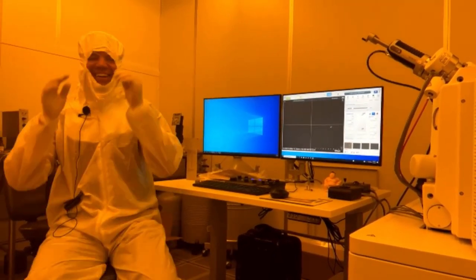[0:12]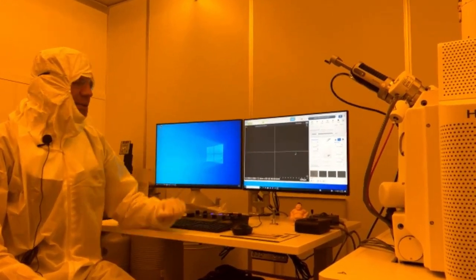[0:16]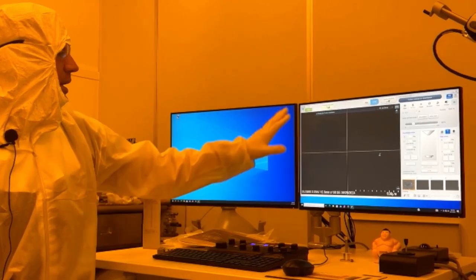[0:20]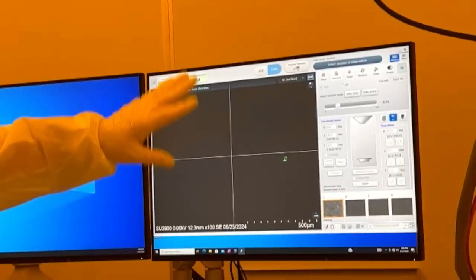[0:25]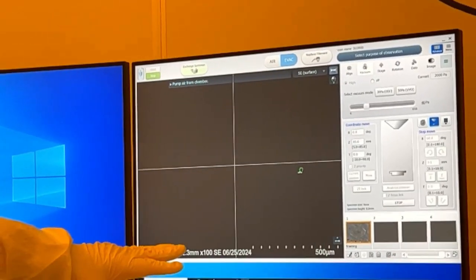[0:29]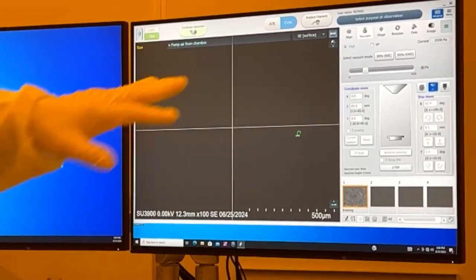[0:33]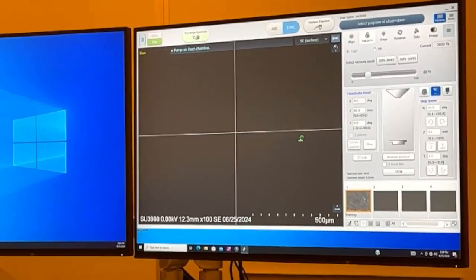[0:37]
So I'm going to go over the filament replacement. How do we know our filament is blown? When we go to turn the filament on, we hit start, and it goes through its startup procedure. You may get a message saying zero emission, check filament. Otherwise, our emission current, our IE, is going to be at 0.
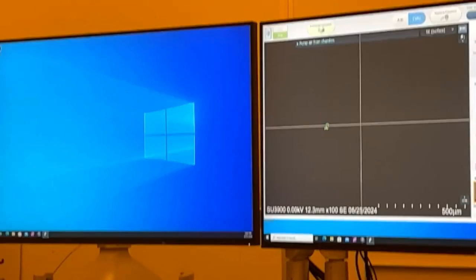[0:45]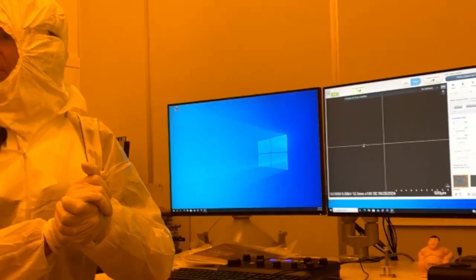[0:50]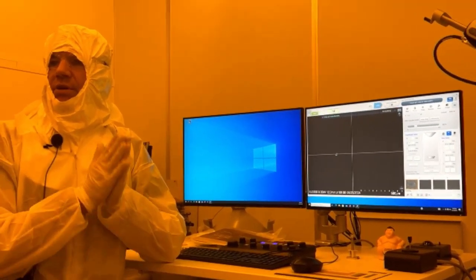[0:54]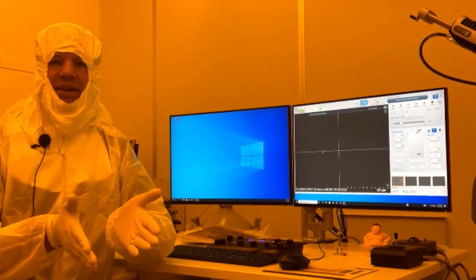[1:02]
Before we do that, though, we want to make sure our filament is actually turned up. Okay? When you add a new user, the default setting for the filament heating current is 0. So you may think, oh shoot, I just started and I have a blown filament.
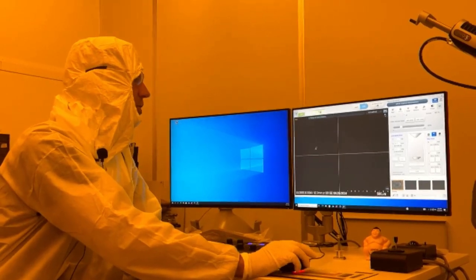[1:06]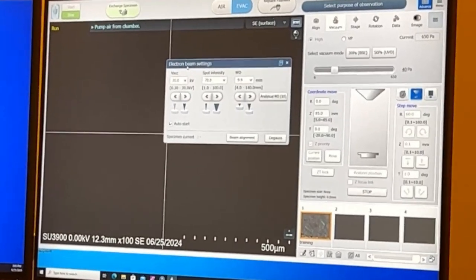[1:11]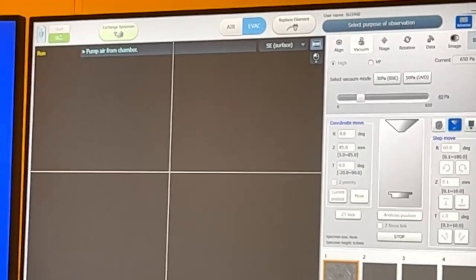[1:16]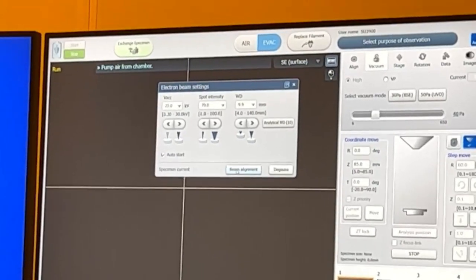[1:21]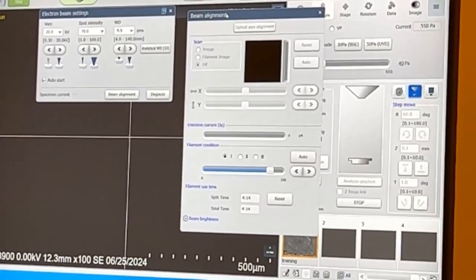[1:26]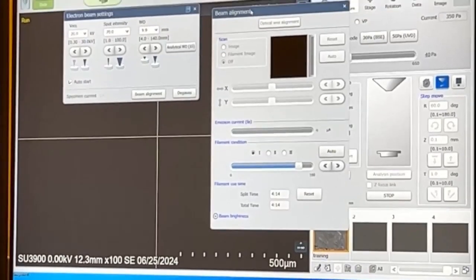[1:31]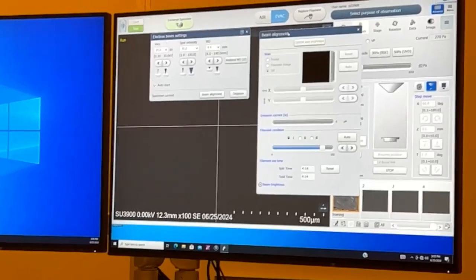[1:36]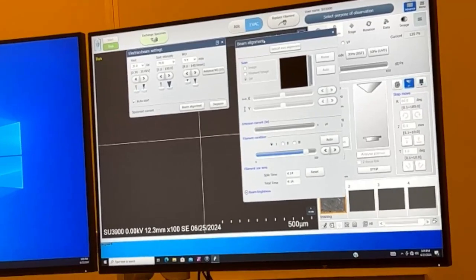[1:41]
So I'm going to show you, if we right click on anything, it brings up another menu. I right clicked on the start stop, and now I'm going to go to beam align. This I didn't show you earlier. I showed you the simple alignment. The beam align is mainly for when we put a new filament in, because that filament is not going to be in the exact same position. It'll be close, but not exactly the same position. So we're going to need to do a beam align.
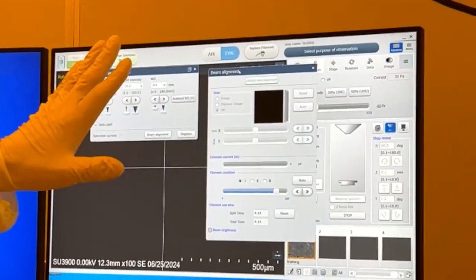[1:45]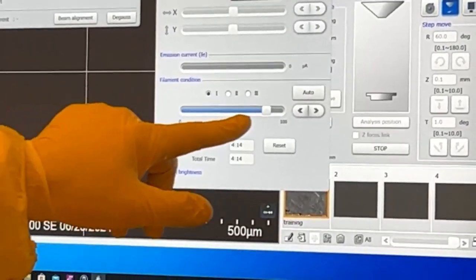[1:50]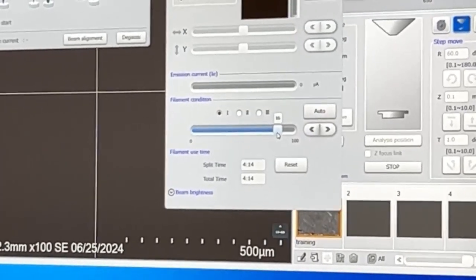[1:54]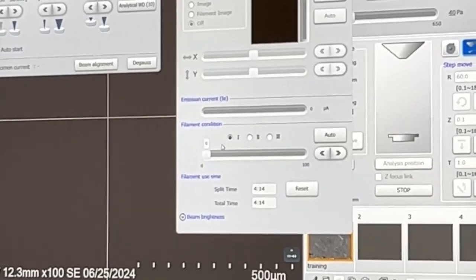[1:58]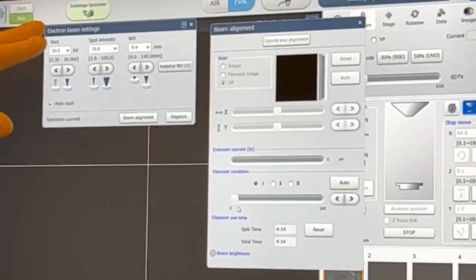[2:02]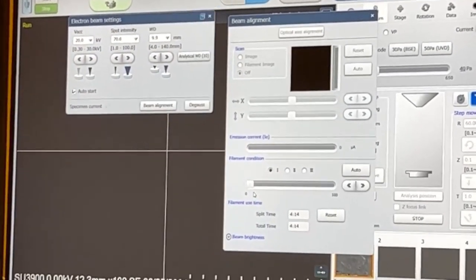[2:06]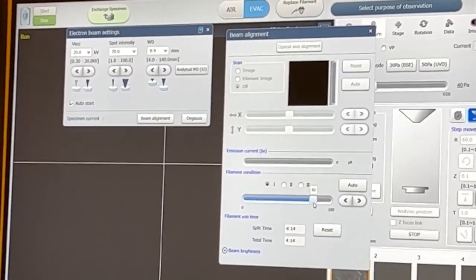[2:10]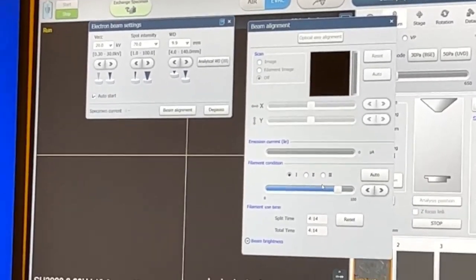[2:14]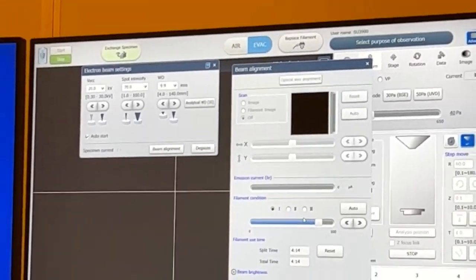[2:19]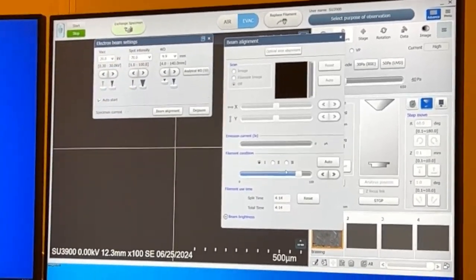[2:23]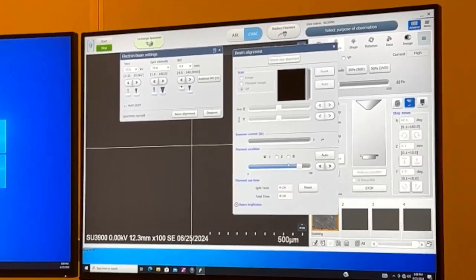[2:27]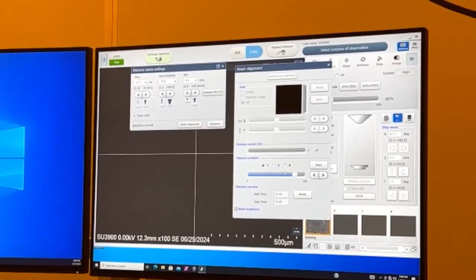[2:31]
So before we go ahead and change a filament, let's make sure we have our filament heating current. When you create a new user, it's going to default to 0. So you need to come in here to our beam setting and then beam align, and make sure that is anywhere between 75 and 85. That gives it a range, so then it can do an auto filament saturation. If it's at 0, it's not going to turn that filament up for us, unless it's already in a range that's producing electrons.
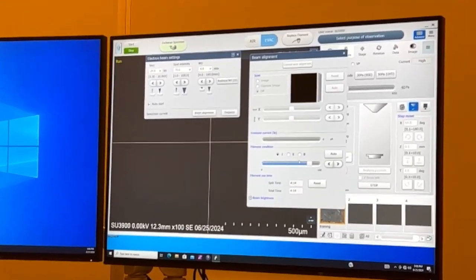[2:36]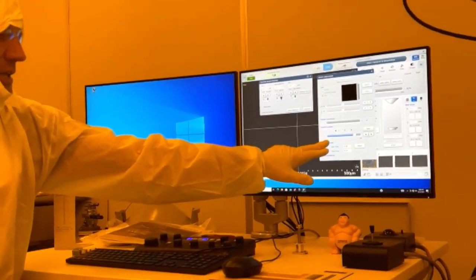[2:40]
So just double check that before you go ahead and change a filament. Just make sure somehow this didn't get turned back down to 0. Okay.
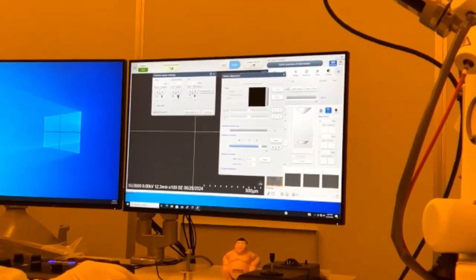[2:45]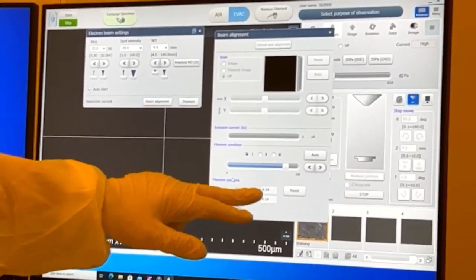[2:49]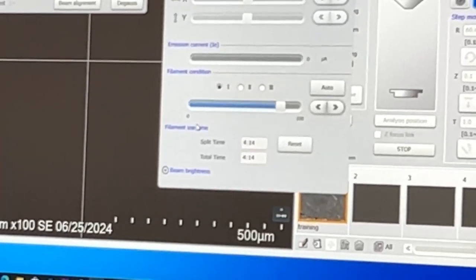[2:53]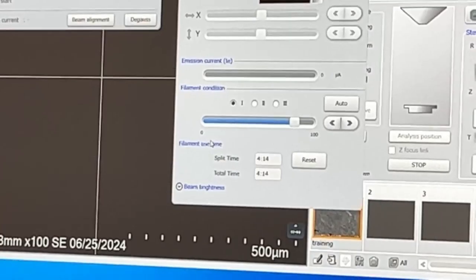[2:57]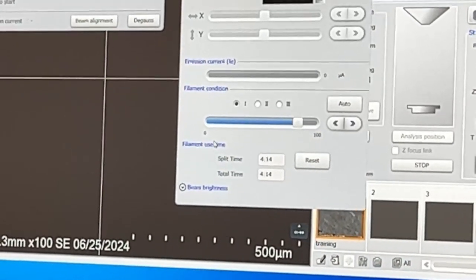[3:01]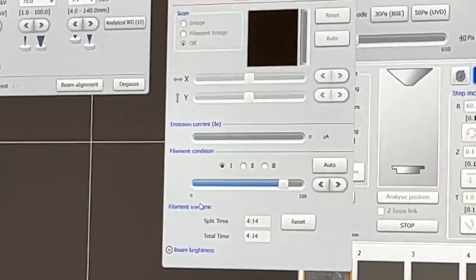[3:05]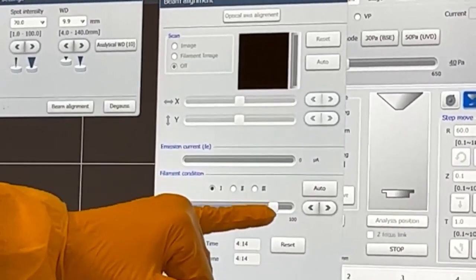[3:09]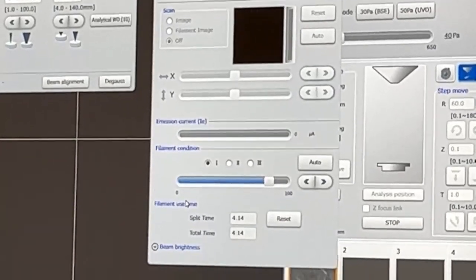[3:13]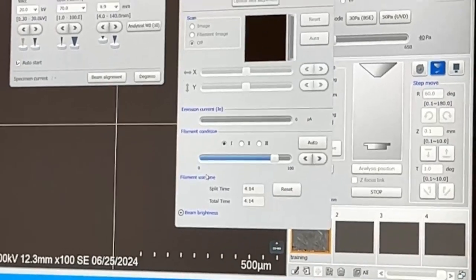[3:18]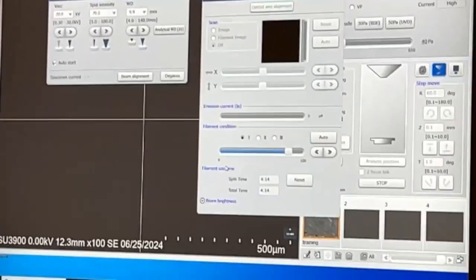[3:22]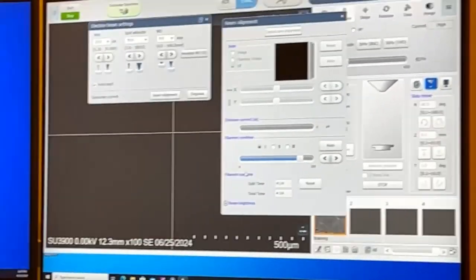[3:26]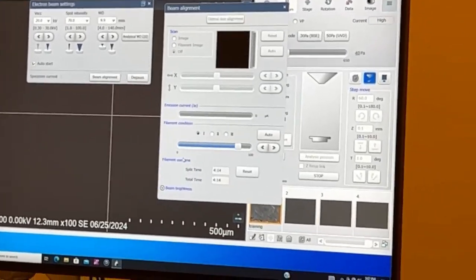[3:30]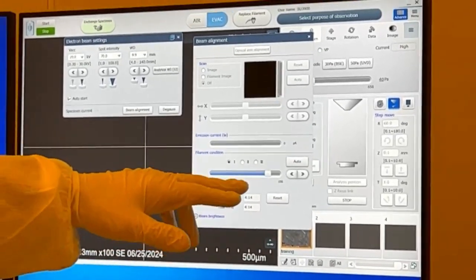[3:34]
This is our filament hours here. If you want to know how many hours are on the current filament, there's 4 hours on this filament so far. Like I said, you usually get around 100 hours. If you're getting much shorter than that, it could be because we're oversaturating our filament, and that is because this slider is turned all the way to 100. Just increasing the filament doesn't mean you're going to get a better image or more signal. We're just shortening our life, because there's a point where you saturate and then you oversaturate. You're not gaining anything, you're just shortening the life. Right now, you set it at 80%. If I hover over it, I'm at 85.
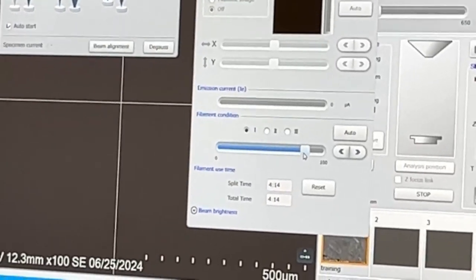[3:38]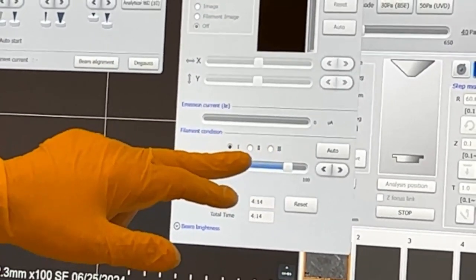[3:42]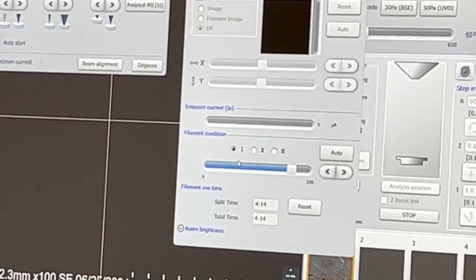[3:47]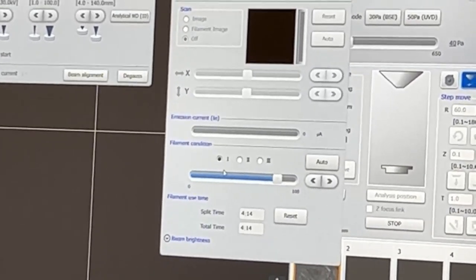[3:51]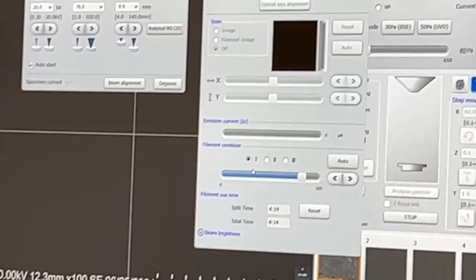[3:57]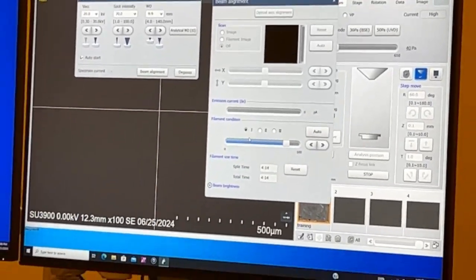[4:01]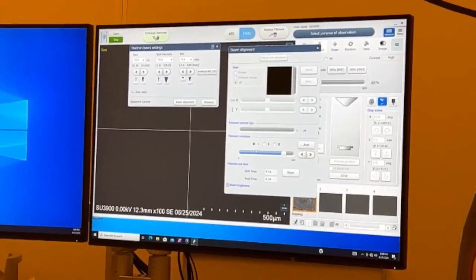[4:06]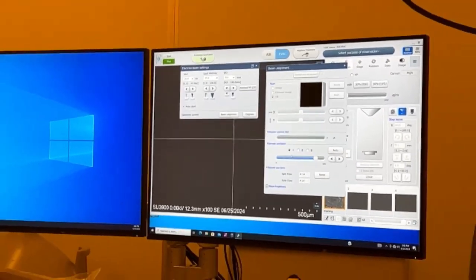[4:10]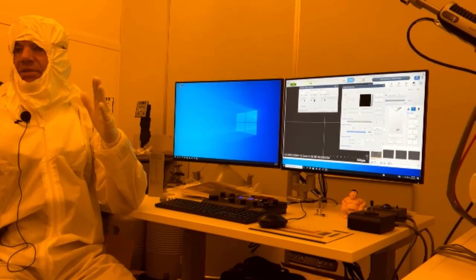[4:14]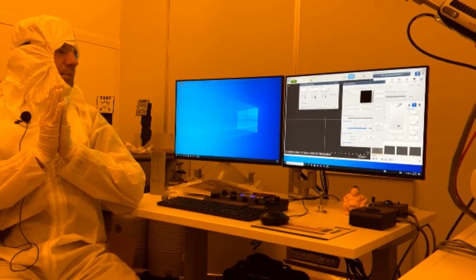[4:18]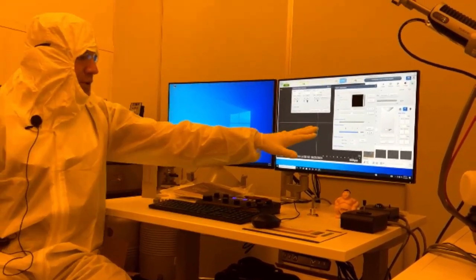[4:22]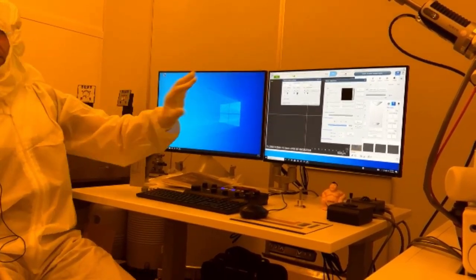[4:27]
These 3 buttons here, 1, 2, 3, are our saturation points. We have a low saturation, a mid, and a high. They're presets. When we turn the beam on, it's basically setting how much heating current we're running through there. 1 is going to give us our longest hours of operation of that filament. 2 is closer to saturation, and 3 is right at saturation, but that's going to shorten your life. So if you get good enough images at 1, just leave it there. We were operating at 1. We had really good images and a lot of signal. So right now, is it 1?
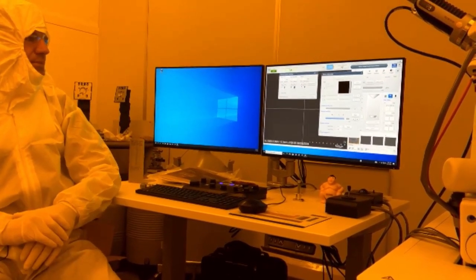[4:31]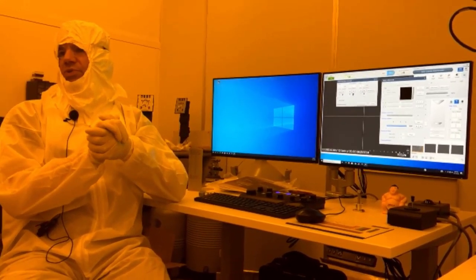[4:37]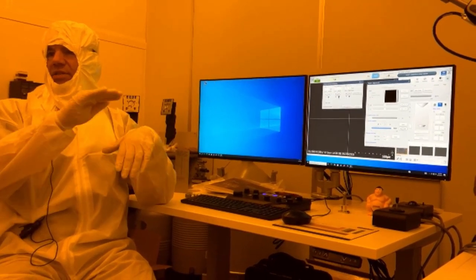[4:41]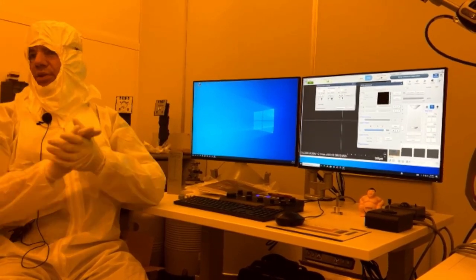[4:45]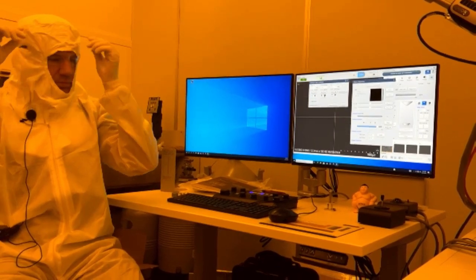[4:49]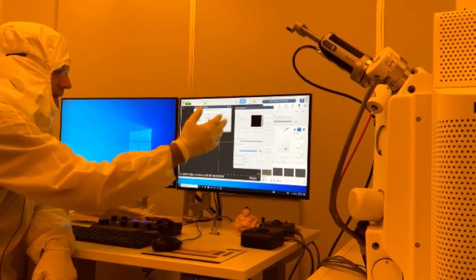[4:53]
It's at 1. Okay, 85% already? It's not a percentage, it's a voltage. It corresponds to a voltage reading. So it's not necessarily a percentage per se. It just corresponds to a certain voltage we're running through that current, or the wire. So we're at 85.
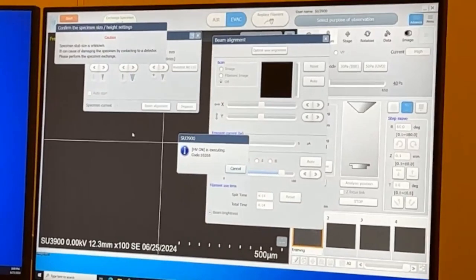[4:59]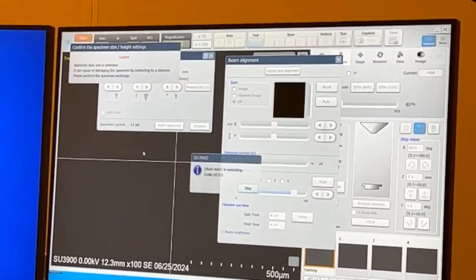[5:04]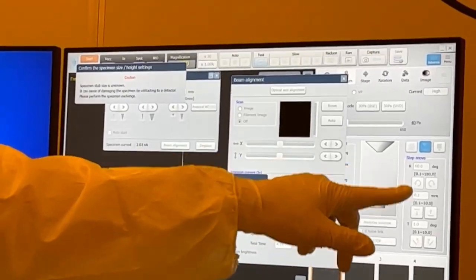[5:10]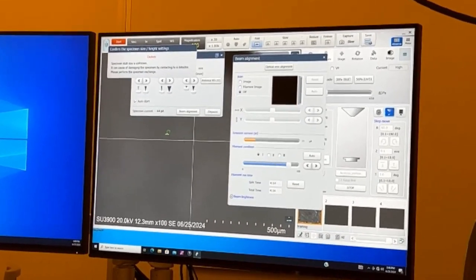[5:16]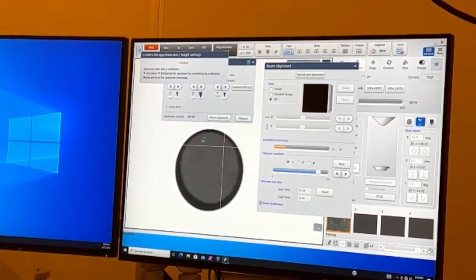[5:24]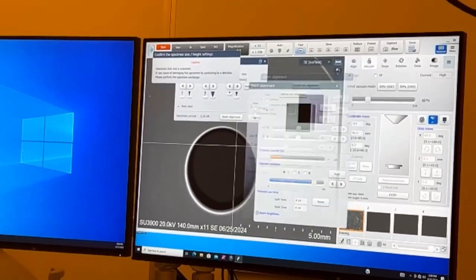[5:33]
Now if I turn my beam on, it's giving me an error message because it doesn't know what size samples are in there. But what's good about that is my stage is grayed out. I can't move my stage. The software knows there's, I don't know what's in there, so we're not moving. I can still change my mag and focus, but we're just looking at the stage. I cannot move my stage because this is all grayed out and the joystick doesn't work.
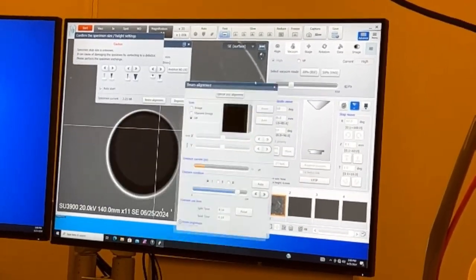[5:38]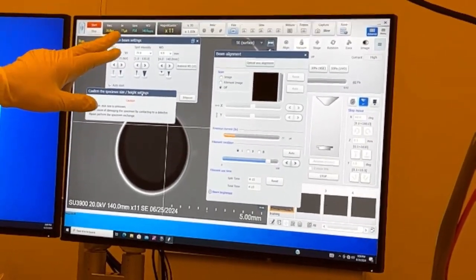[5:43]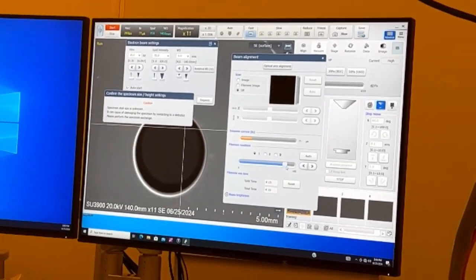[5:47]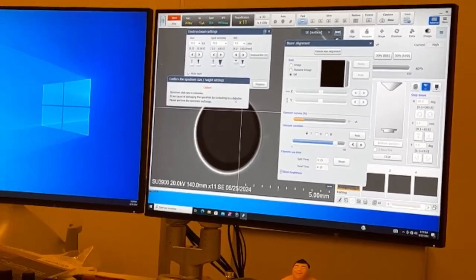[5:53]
So I have emission current. I'm at 85. This filament's still good, but I'm going to show you what it looks like if the filament's blown.
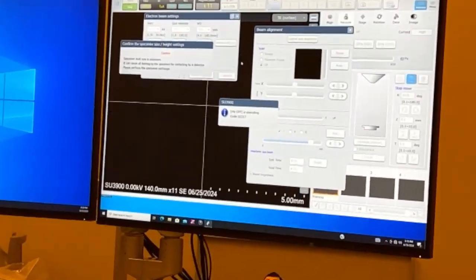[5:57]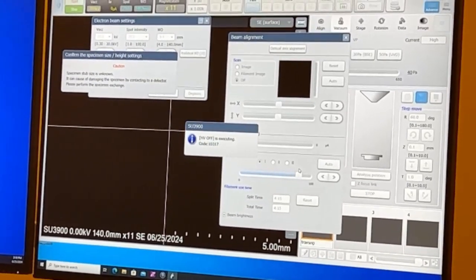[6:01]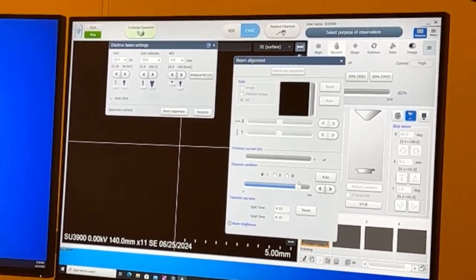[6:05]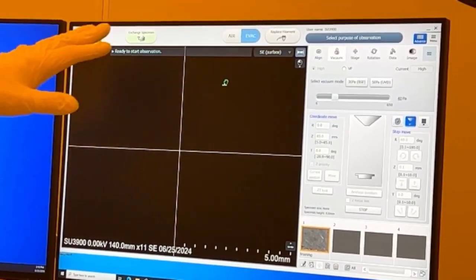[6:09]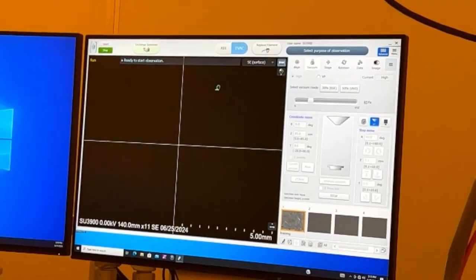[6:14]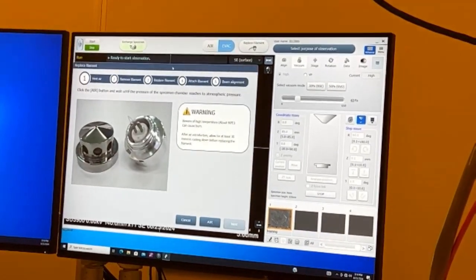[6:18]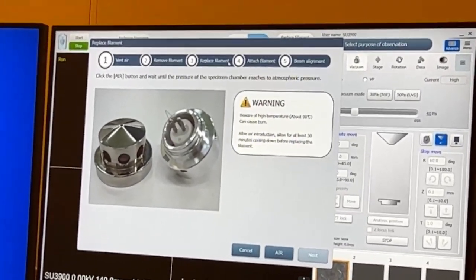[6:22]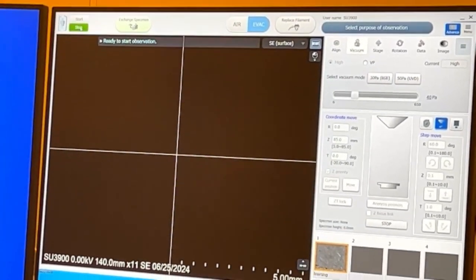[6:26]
The steps for that and how easy it is to change the filament. All right, so no filament. We're going to click this button, replace filament. Okay. So you turned off the voltage. I turned it off. Let's see if it's on.
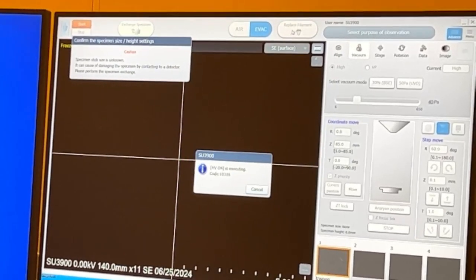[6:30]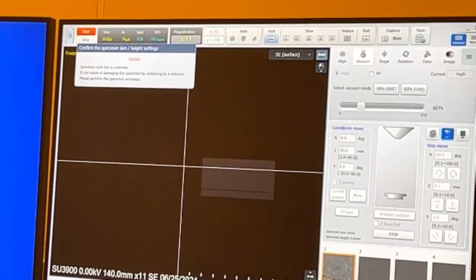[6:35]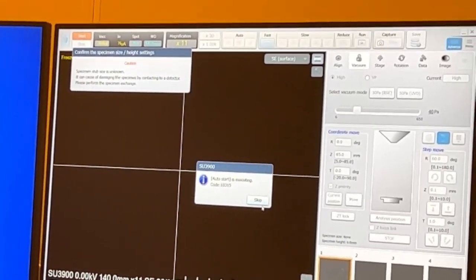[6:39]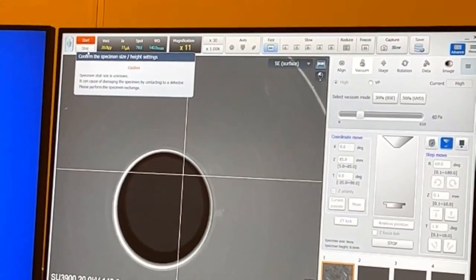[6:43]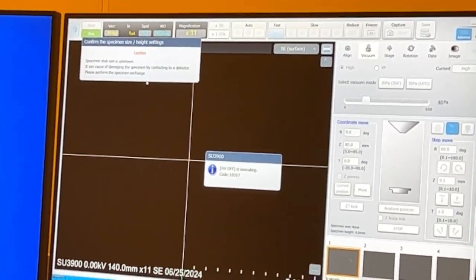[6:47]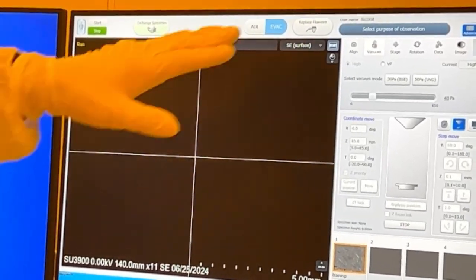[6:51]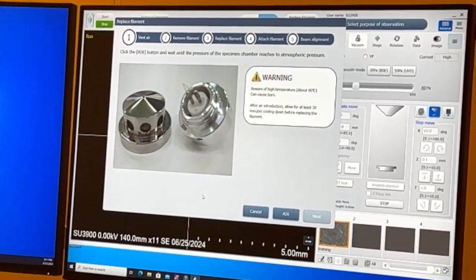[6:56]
And if I click that with it on, well, it's assuming the filament is blown. So see, it's on, so that's not even there. It doesn't show up until I turn off the filament. So we're going to hit replace filament, and it's going to bring up a new guide. And we just step through the guide.
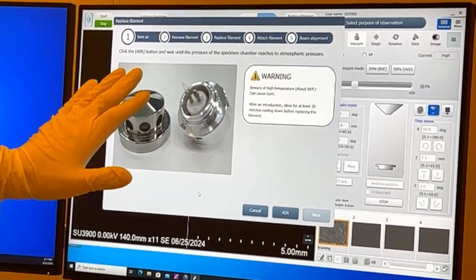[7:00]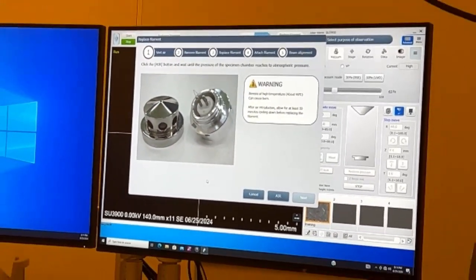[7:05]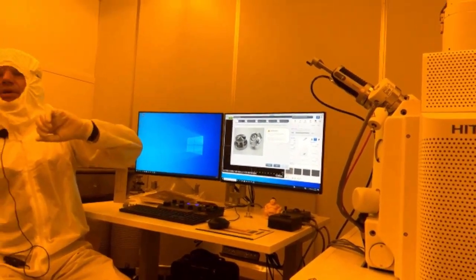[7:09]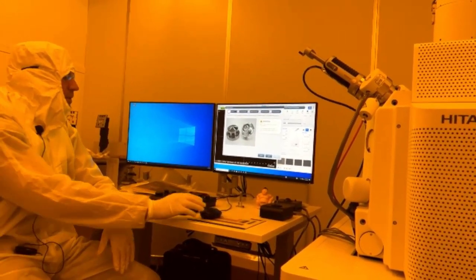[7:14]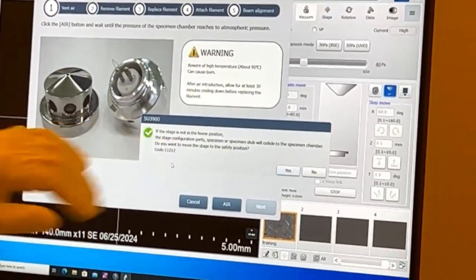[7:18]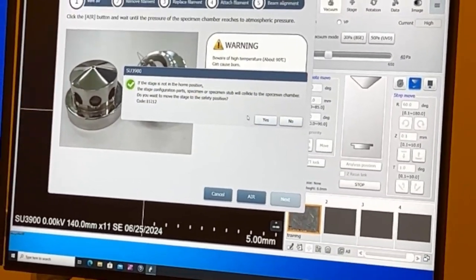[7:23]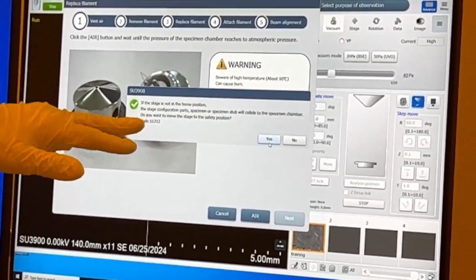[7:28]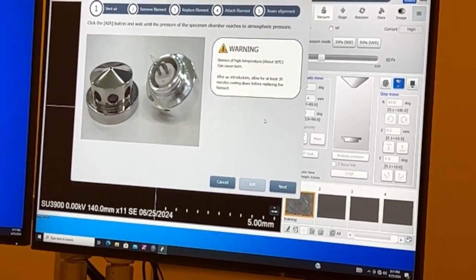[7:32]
Very easy. So it's basically telling us if the filament's been on for a while, it gets hot. It's just like a light bulb. It's going to get warm. Let it cool off before we vent. Okay? So we can vent through here. Now it's saying, because I don't know where the stage is, I'm going to go to the home position. Do you want the stage to go to the home position? Yes. And now it's venting again.
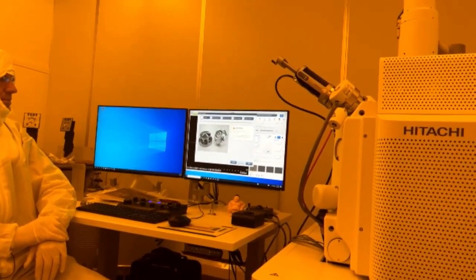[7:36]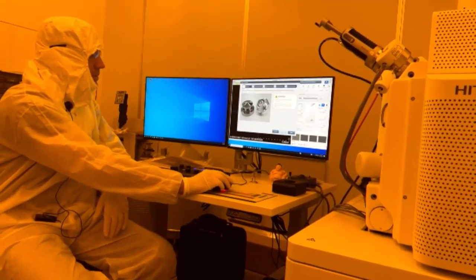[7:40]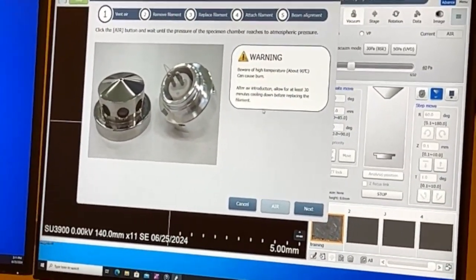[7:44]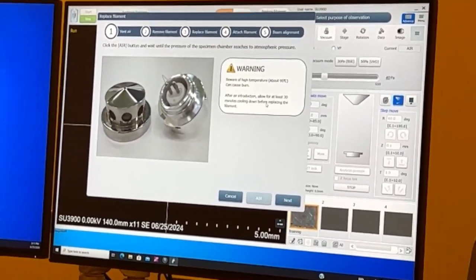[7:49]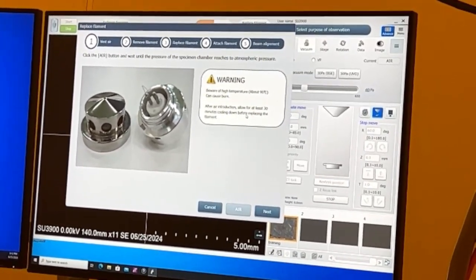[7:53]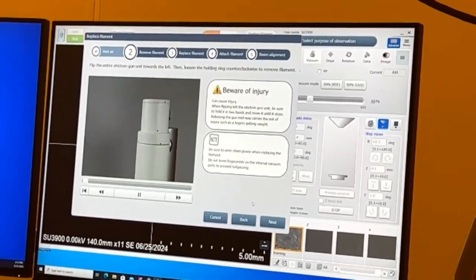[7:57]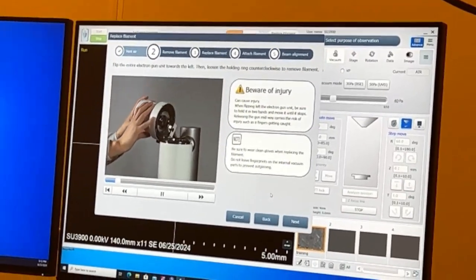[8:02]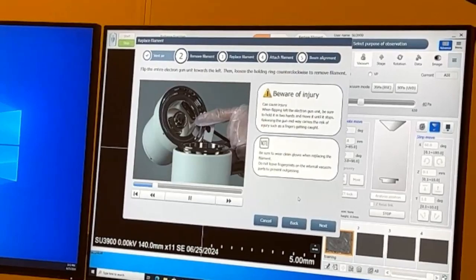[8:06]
So it's giving you a warning here. If the filament's been on, wait 30 minutes before we open it up and touch it, okay? So we hit next, and now it's going to show us a video, which is nice. It's showing us exactly what to do.
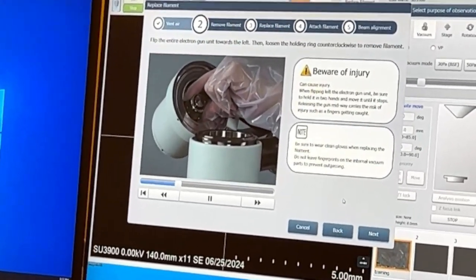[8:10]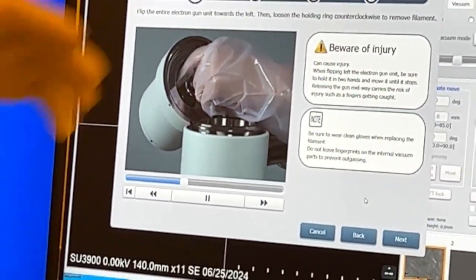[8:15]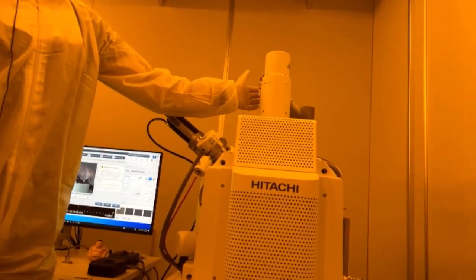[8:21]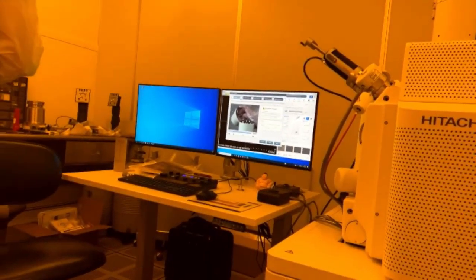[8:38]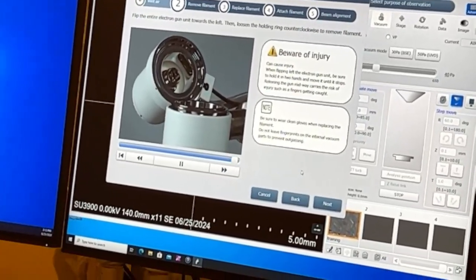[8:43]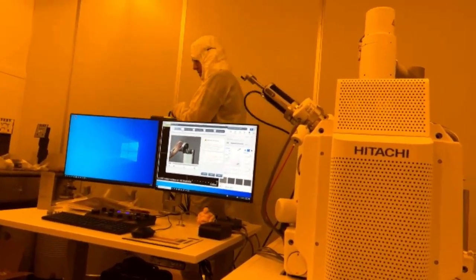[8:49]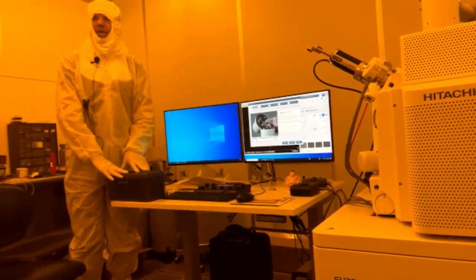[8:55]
So you can see up in the gun here, there's a hinge here. So we need to loosen, there's 4 set screws. So loosen the ones that are on this hinge. Don't loosen the top 4, okay? The top 4 are for aligning the gun. The bottom 4 are for opening the gun, okay? So we're going to come behind here and grab our trusty little toolbox. Inside here is where we keep the spare filaments.
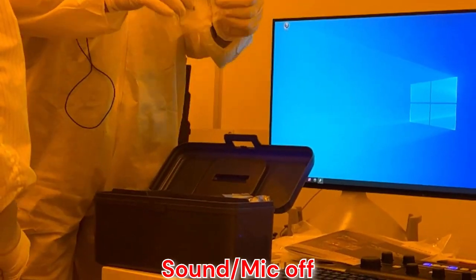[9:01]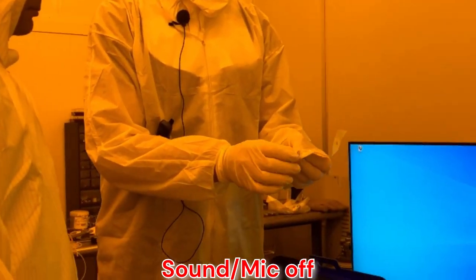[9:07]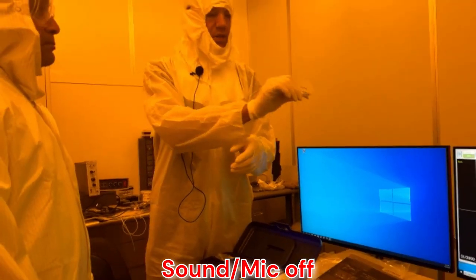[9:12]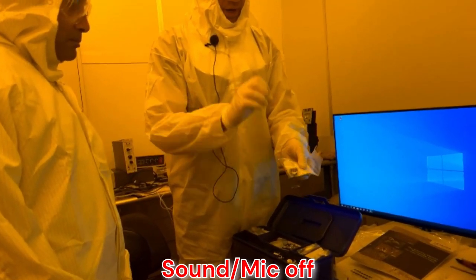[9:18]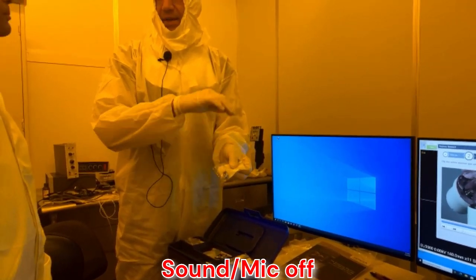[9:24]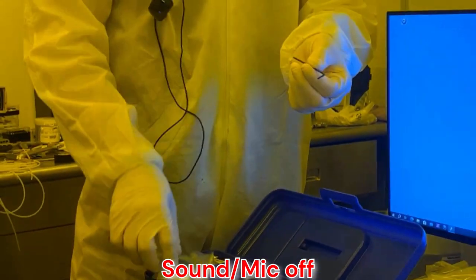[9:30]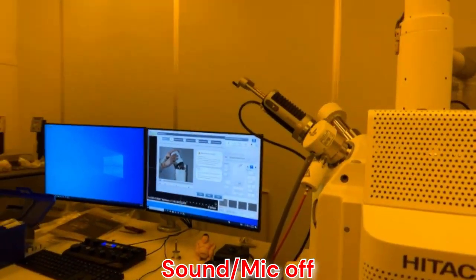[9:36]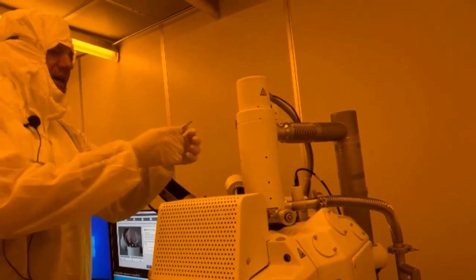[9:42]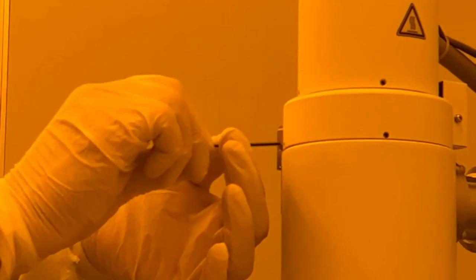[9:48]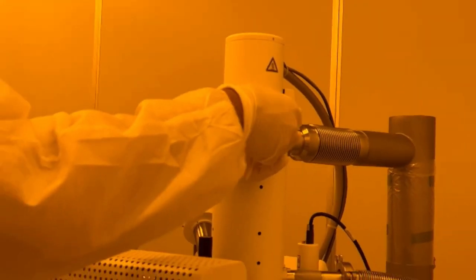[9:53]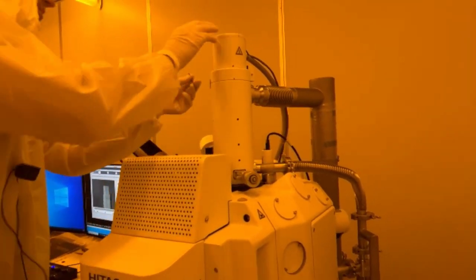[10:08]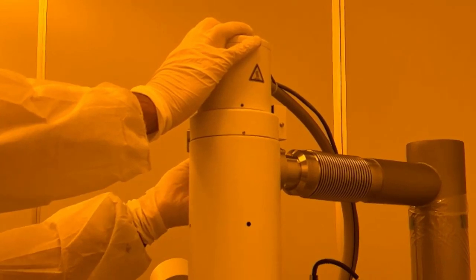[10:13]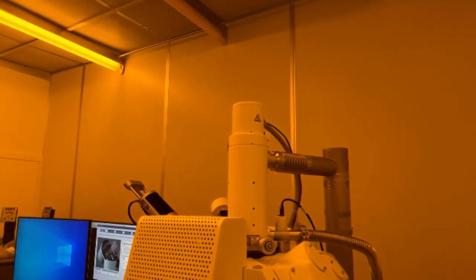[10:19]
All right, so we're going to take the Allen wrench and we're just going to loosen. We don't need to unscrew them all the way. We're just going to loosen them a little bit. We have 4 of those screws. 4 at the bottom, yep. Okay, still venting there. So once that goes solid.
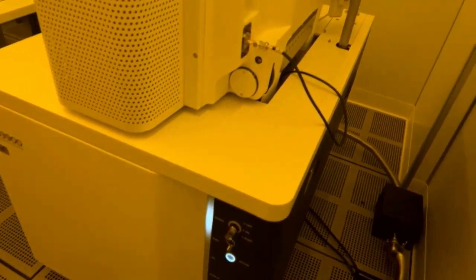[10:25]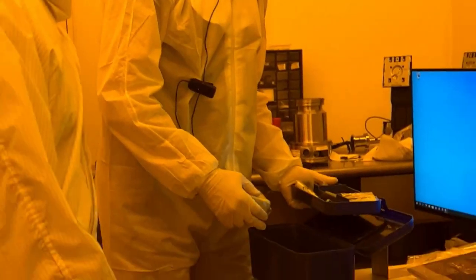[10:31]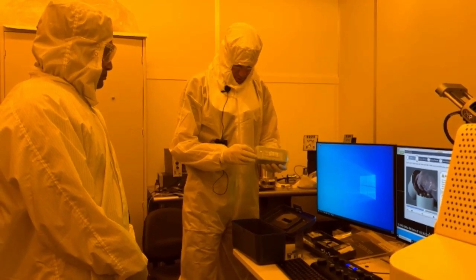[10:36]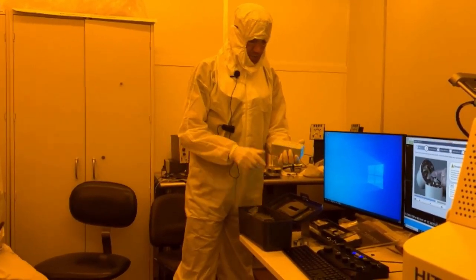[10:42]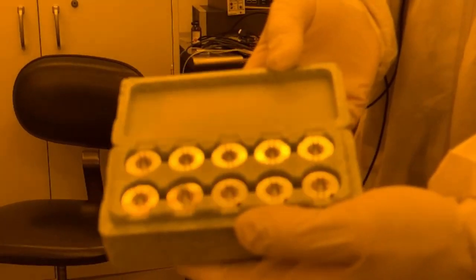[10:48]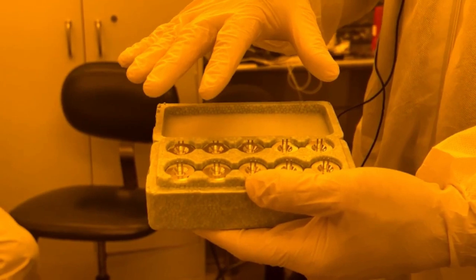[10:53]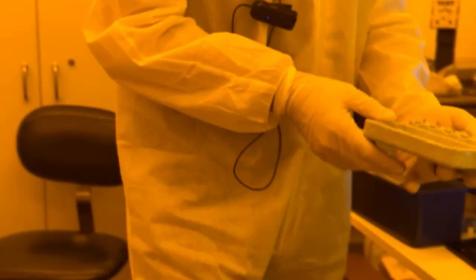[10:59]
So in the bottom is the box of filaments. So you have two boxes here. The box is full of bases. So these are pre-centered filaments. Each one is its own filament, and we take the cap and we just put it on here. So we don't have to align these. The only thing we have to do with these, you can take it by the feet.
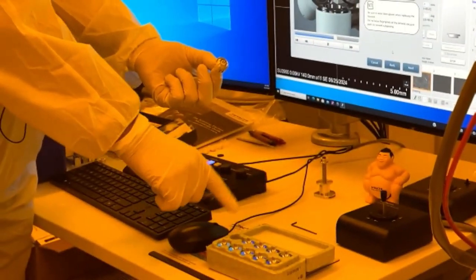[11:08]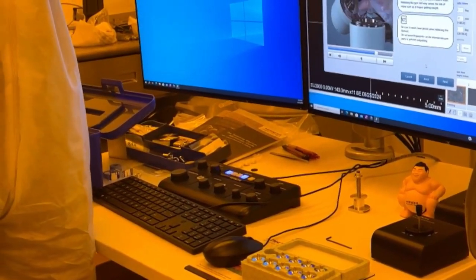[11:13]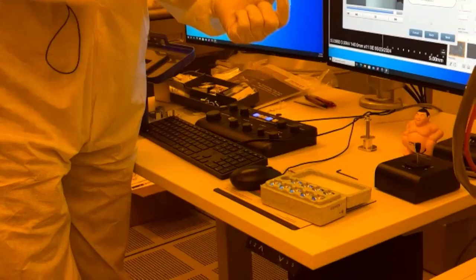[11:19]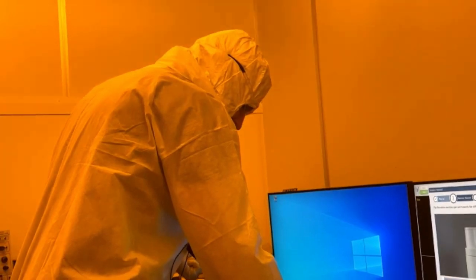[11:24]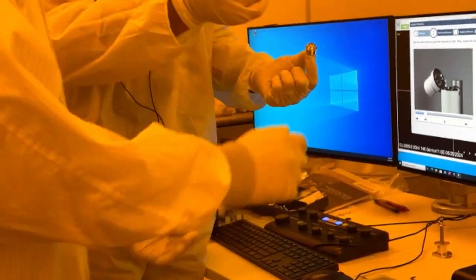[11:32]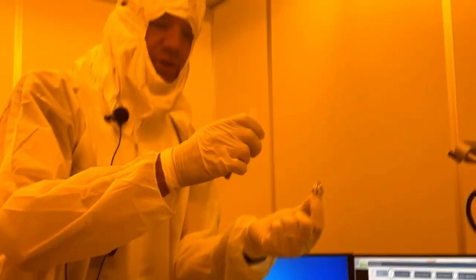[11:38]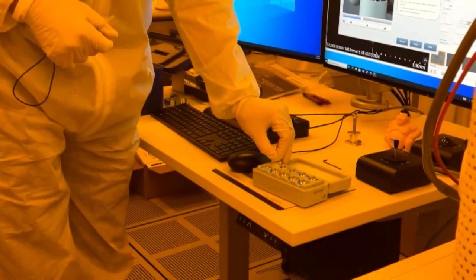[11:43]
These brass spacers set the height of the cap. So whichever ones come with the base that it came with, that's what you put on this. So you take some tweezers, which there should be some on the table here or in the box. You take the tweezers and then you take whatever spacers came with the base, put it on there first, and then you screw the cap on. Okay.
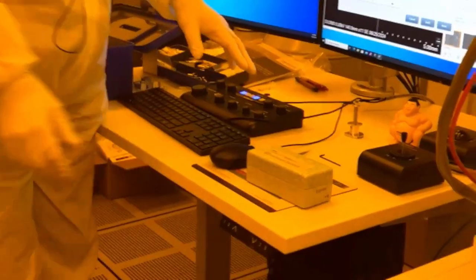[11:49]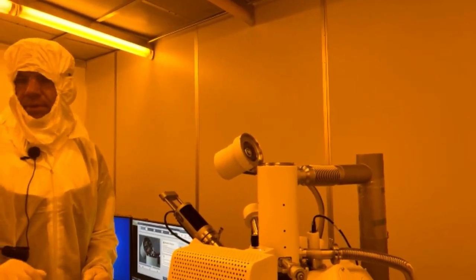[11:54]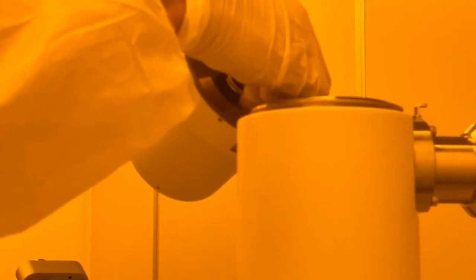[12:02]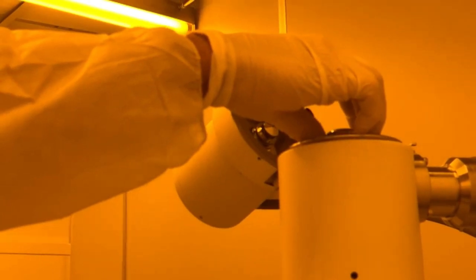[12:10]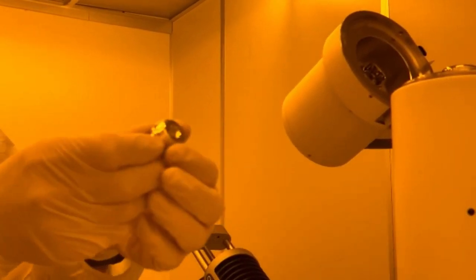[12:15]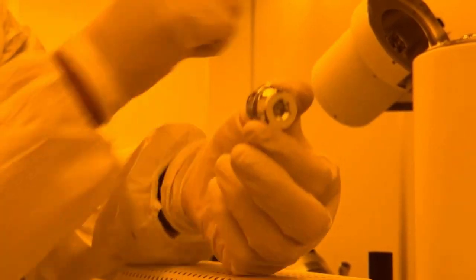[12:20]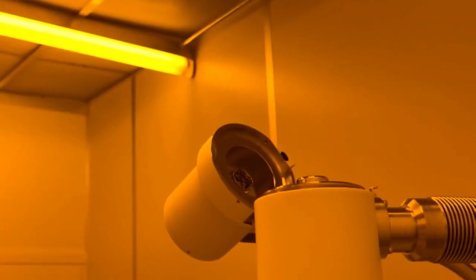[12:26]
So now we can open up the gun. Inside here, there's a locking ring. And it's not hot, so I'll open it. The other reason why you want to wait for it to cool off is because these expand when they're hot, so it's harder to take off. I usually just set the ring up there, and these slide out. And you notice they're indexed. There's a notch on each one, and there's a key up in here. So you cannot put it in the wrong way.
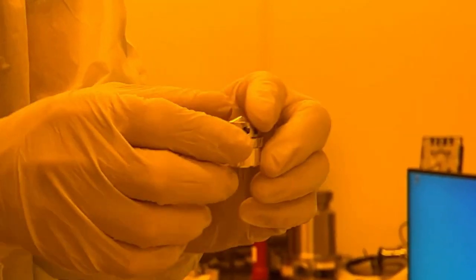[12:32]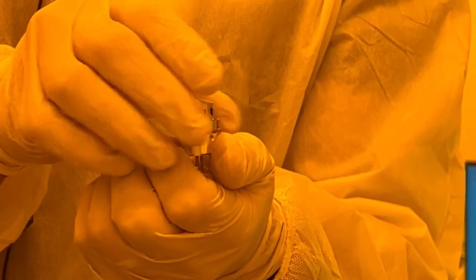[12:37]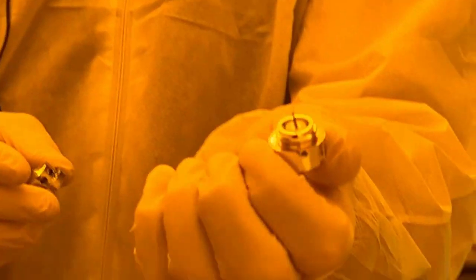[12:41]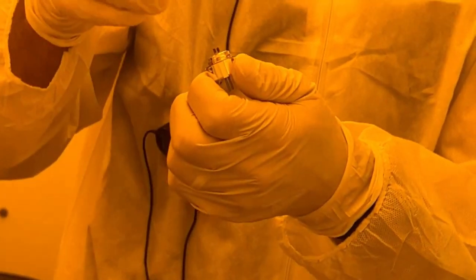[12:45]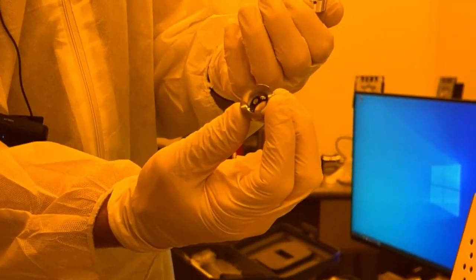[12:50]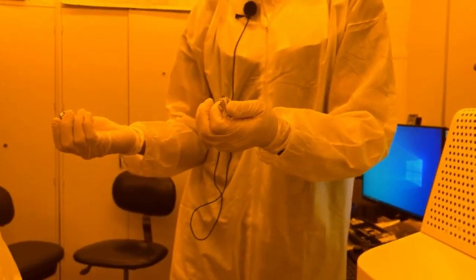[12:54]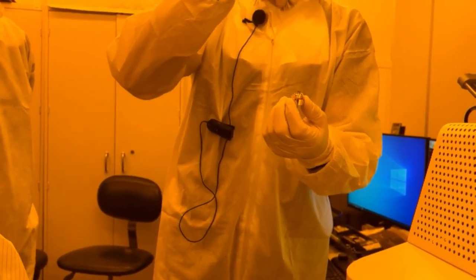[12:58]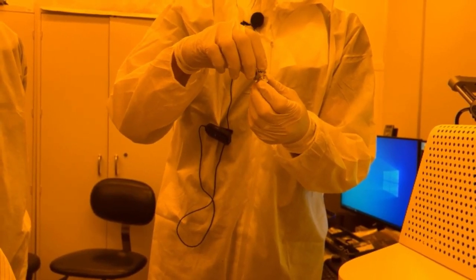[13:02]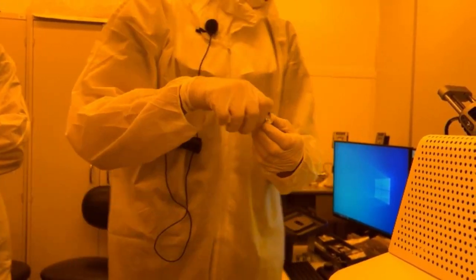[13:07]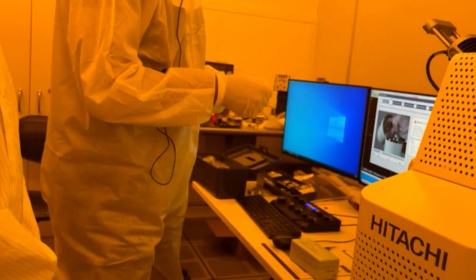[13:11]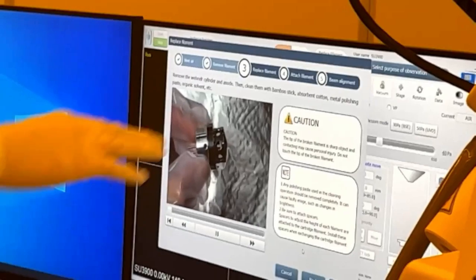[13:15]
So the copper spacer. You see them here? So when I take the cap off, this one has the spacers here. This cap's still good, but you can see how it starts to tarnish on the inside. How do you clean it off? Metal polish. We just use metal polish, a Q-tip, cotton tip applicator, and metal polish. Is that some kind of an etchant for tungsten, metal polish? Yeah. It shows in the video. So if we come here and we hit next, it'll show taking the cap off.
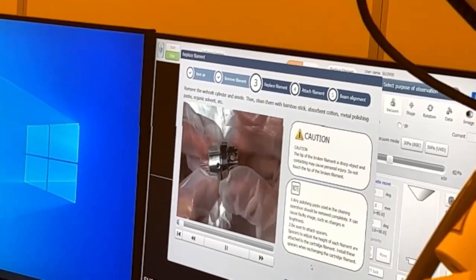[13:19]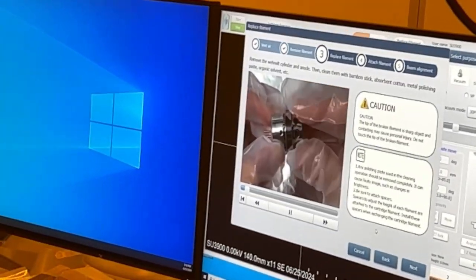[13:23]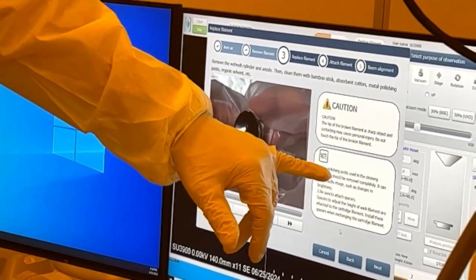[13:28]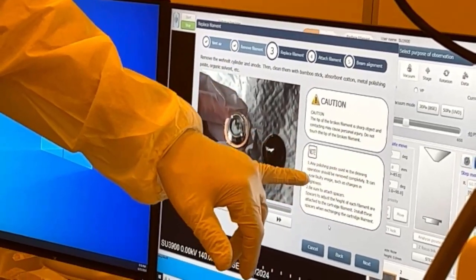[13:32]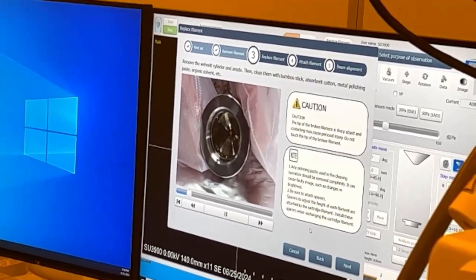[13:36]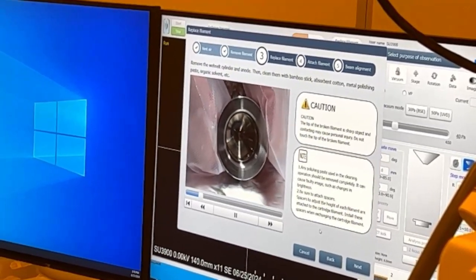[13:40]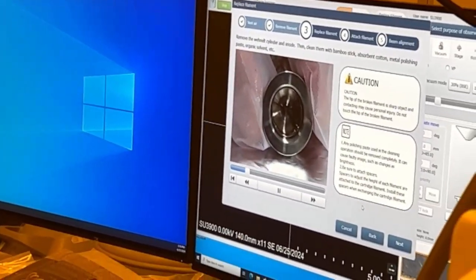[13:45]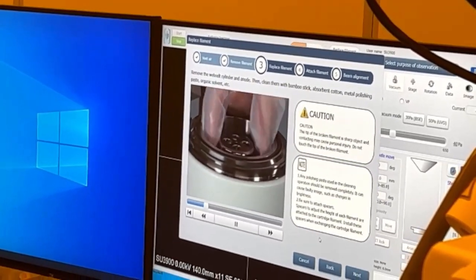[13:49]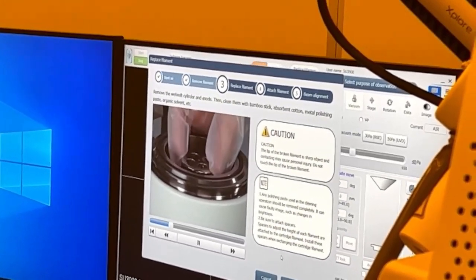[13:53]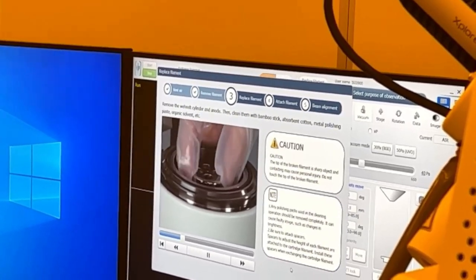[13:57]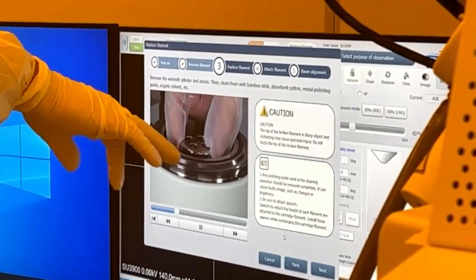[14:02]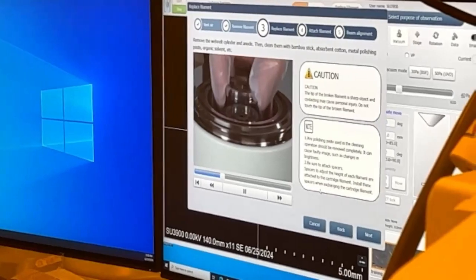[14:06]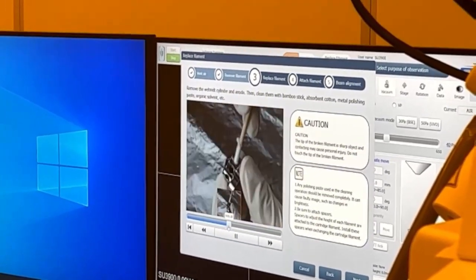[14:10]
So it's saying any polishing paste used in the cleaning operation should be removed completely. They recommend using metal polish and then sonicating it in acetone or isopropyl. But when I come and do the maintenance, I clean it and everything. So like I said, you have a spare cap. They're actually telling you to take the anode off too and clean that. I wouldn't do that. So yeah, they're showing you.
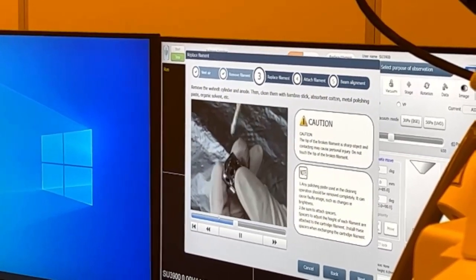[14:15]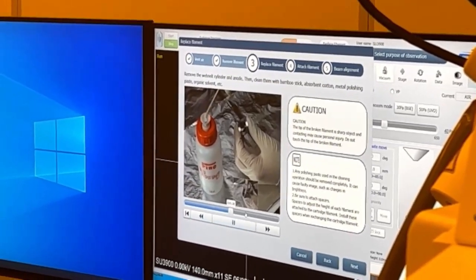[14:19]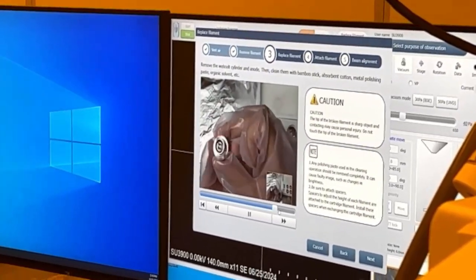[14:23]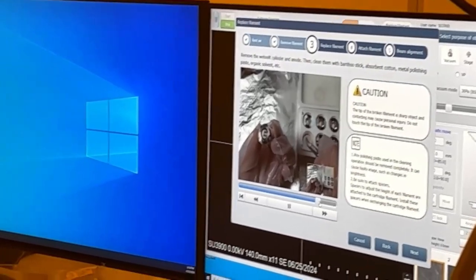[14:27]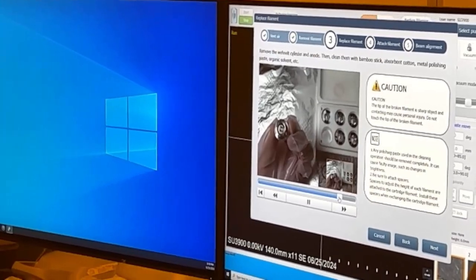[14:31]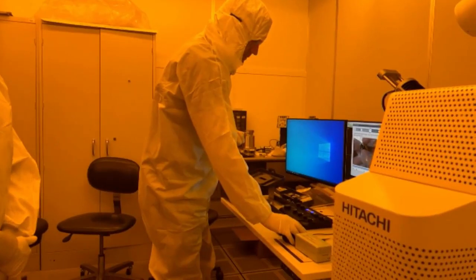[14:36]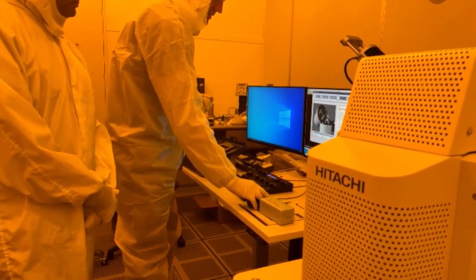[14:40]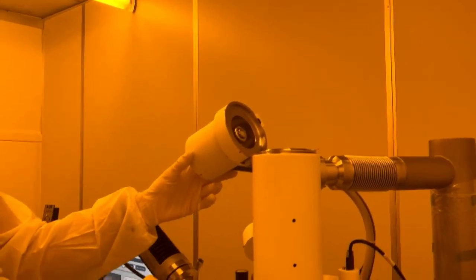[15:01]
Or they've got some acetone, and they're showing you taking the new one. Yeah, so everything's in the video. Wear gloves, of course, which you're going to be in here anyways. And then it's showing putting the filament back in. Just slides in. And then just get this snug. Don't over tighten that ring. Just snug. And then you can close it.
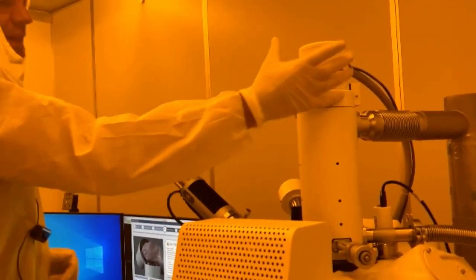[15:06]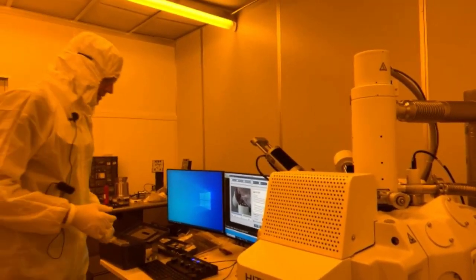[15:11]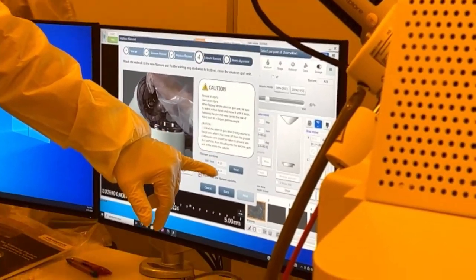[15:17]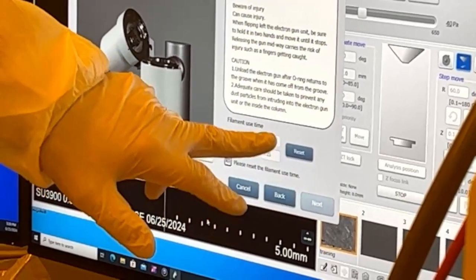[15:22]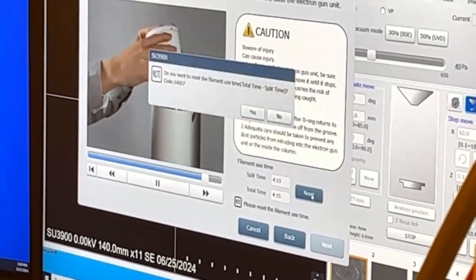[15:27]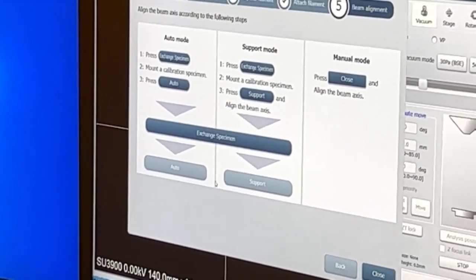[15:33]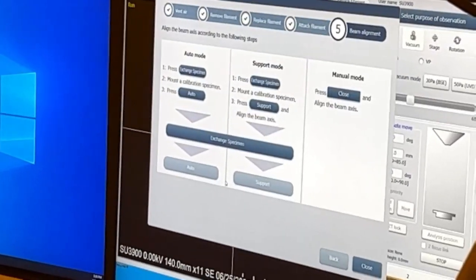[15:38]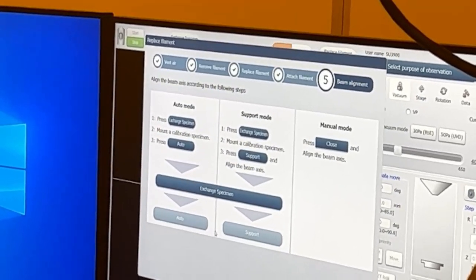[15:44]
And then I like to, before I tighten these back up, let the vacuum pump down. So now it's asking us to reset the time. It won't let me go to the next step unless I reset the time. So even though this one has hours on it, we'll reset it so we can go to the next step. Okay. So now we have three options. We have auto mode, support mode, and manual mode. What mode do you think we're going to use? Auto. We're going to use auto mode, exactly.
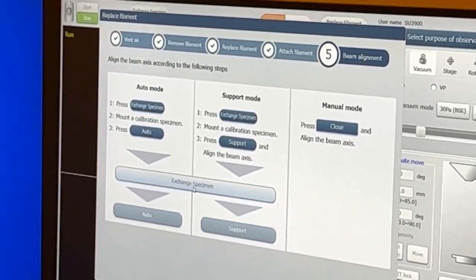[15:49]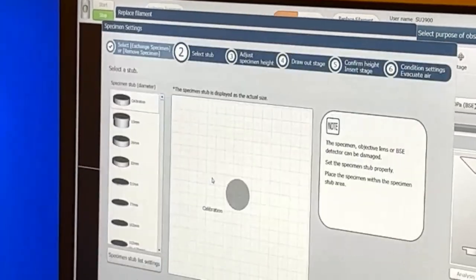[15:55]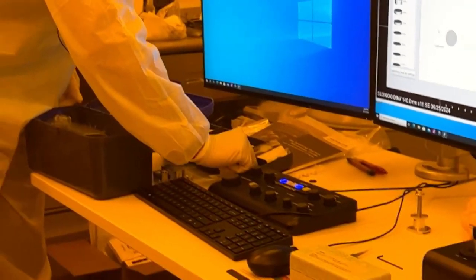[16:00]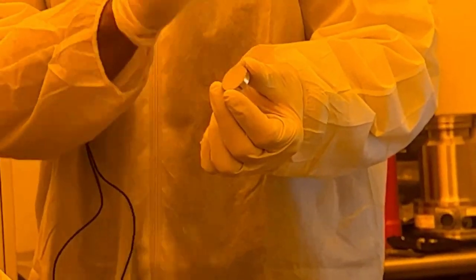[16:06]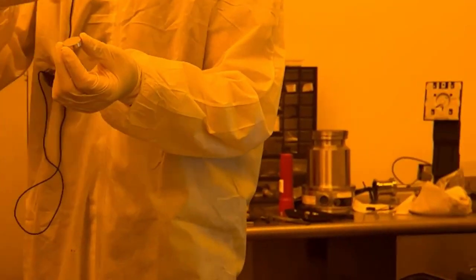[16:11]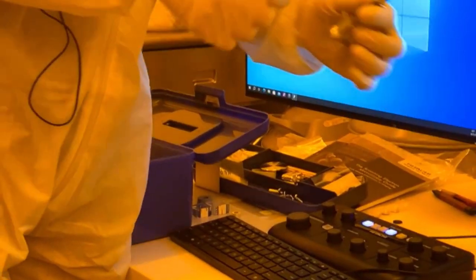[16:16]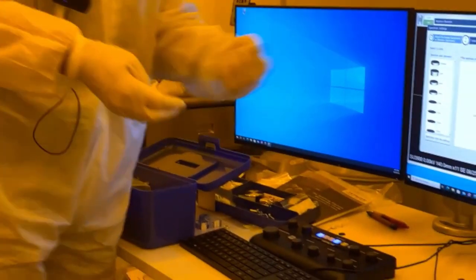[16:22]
So for auto mode, it's telling us we need to put a specimen in. But we're not going to just put any specimen in. We're going to put in the calibration specimen. The calibration specimen's in the toolbox. If you notice, it's just an aluminum stub that's got a rough surface. Oh, okay. That's all it is. It's so we have some features and some contrast. So it's just threaded on. So we're going to take our base, and just like we did with any other sample, we're going to load it up.
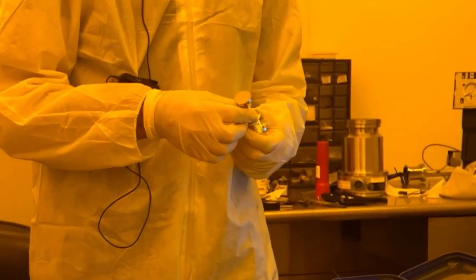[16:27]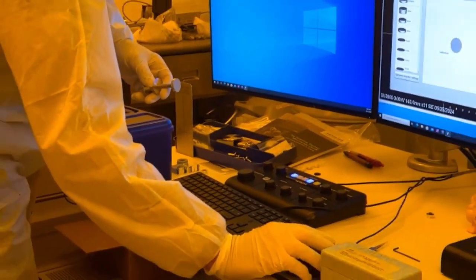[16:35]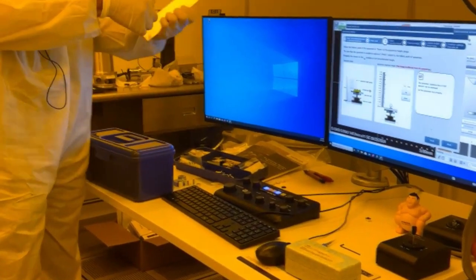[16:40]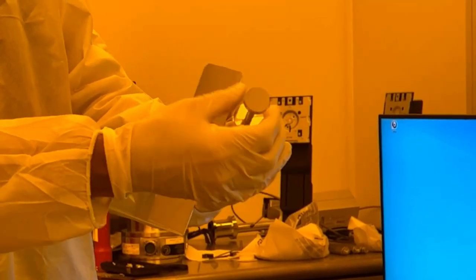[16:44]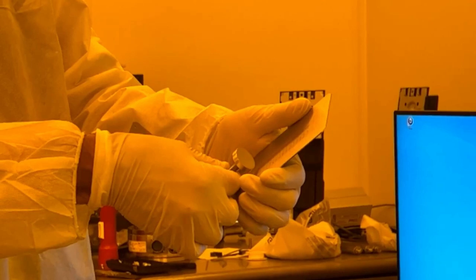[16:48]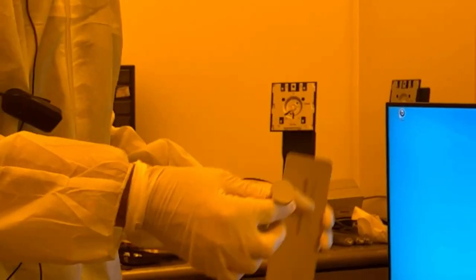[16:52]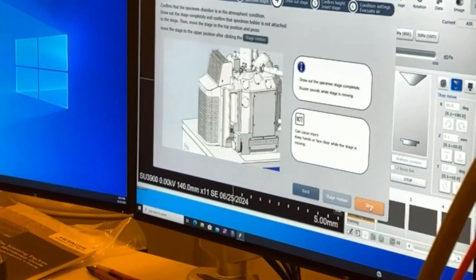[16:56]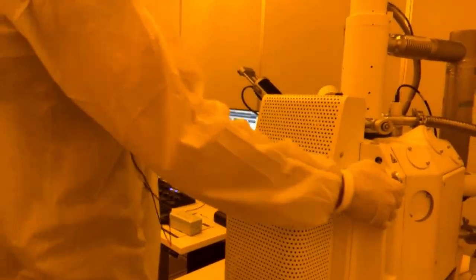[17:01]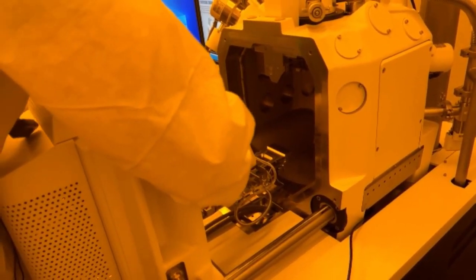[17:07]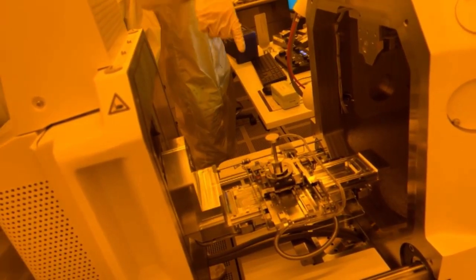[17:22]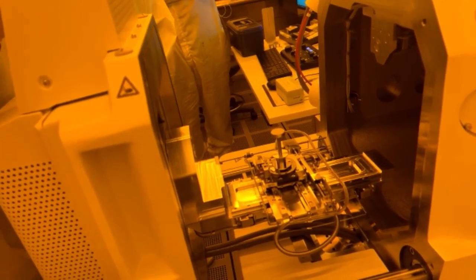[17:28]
So it already shows same size, calibration. We hit next. We're going to measure our height. So we're actually below, so I'm going to loosen this up. Zero. Tighten it up. Next, we're going to open the door. Remember the flat side? From that side, or could you go from the left too? Well, because the stop's here, it's easier to come from this way. I mean, yeah, you could stand here and do it. No, I meant like could it go 180 and slip on? No, no. You can't change that orientation. Oh, I didn't see that. Here's the stop. Yeah.
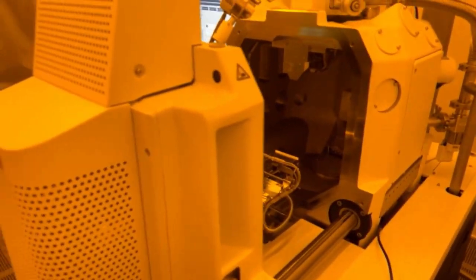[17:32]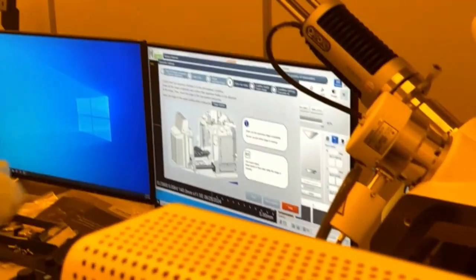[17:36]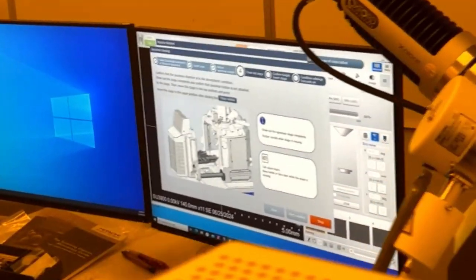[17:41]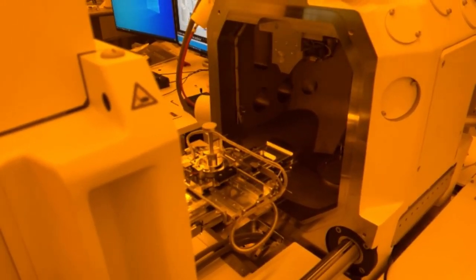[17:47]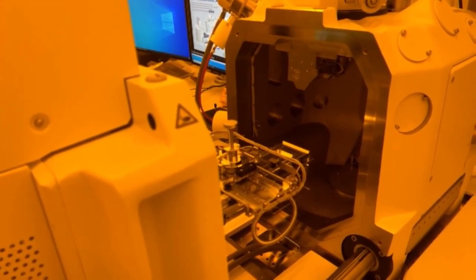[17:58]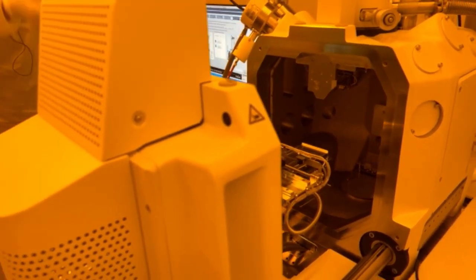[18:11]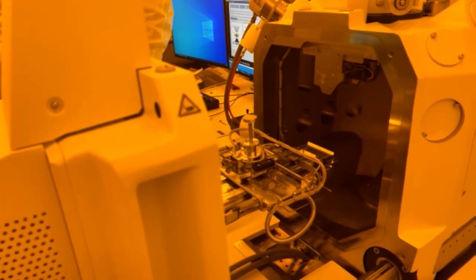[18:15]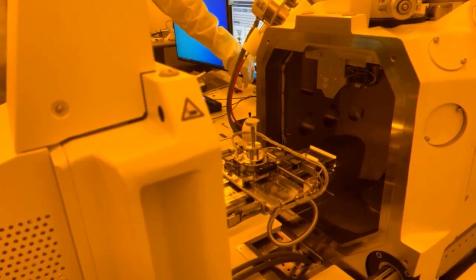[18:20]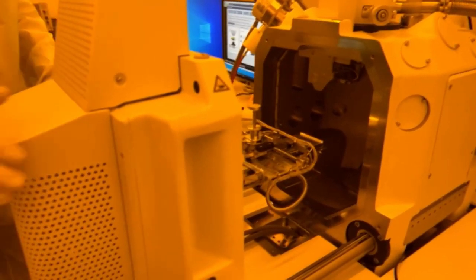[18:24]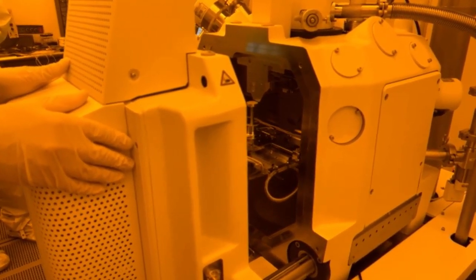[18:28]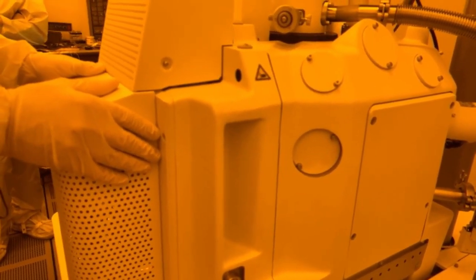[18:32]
So now we're going to hit stage move. What do you think? Yeah. Stage move. So it's just setting the height, just like a regular sample. Oh, that has to be done before we load it? Yeah, every time. When we load a sample, you're always going to go through this procedure, because your height could be different. And obviously it will give an error if I don't do that, right? Like, if I load the sample and I forget to do the stage move over there and then try to pump down? It won't allow you to pump down. Yeah. It's close, but as long as it goes under there, you're fine.
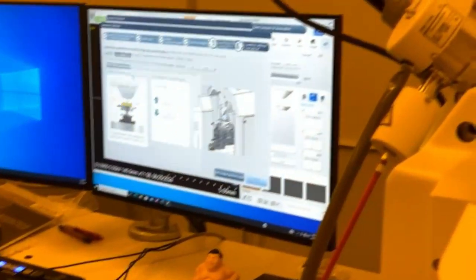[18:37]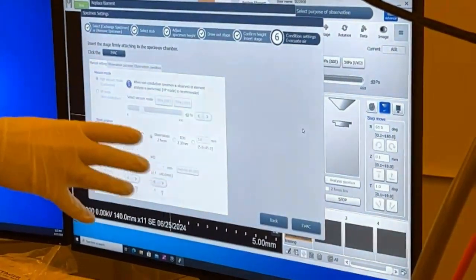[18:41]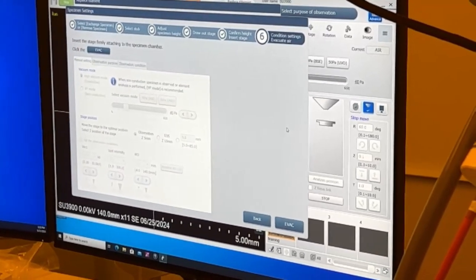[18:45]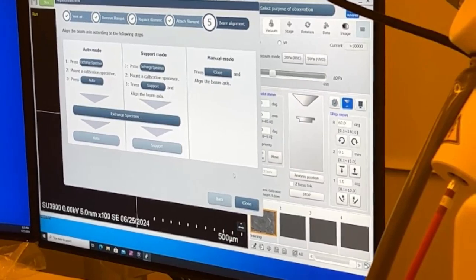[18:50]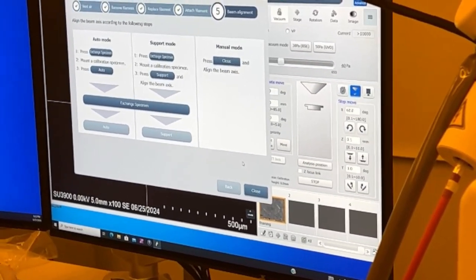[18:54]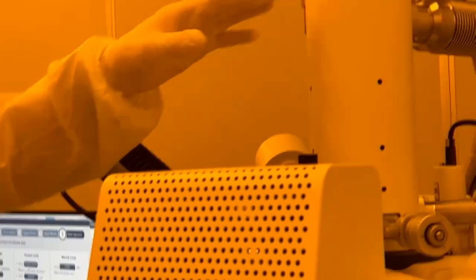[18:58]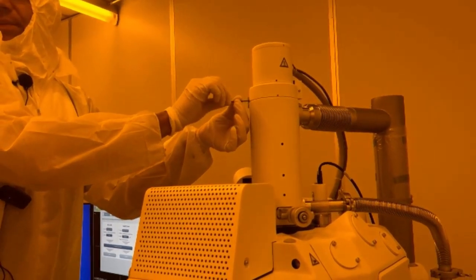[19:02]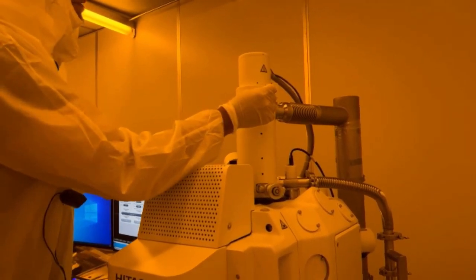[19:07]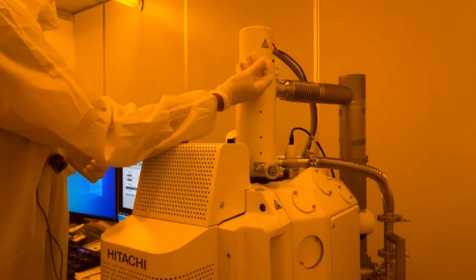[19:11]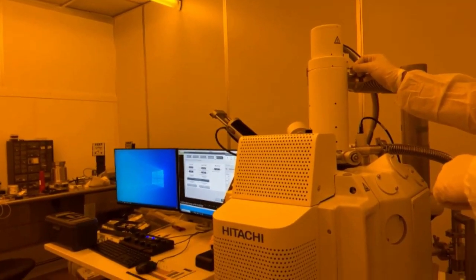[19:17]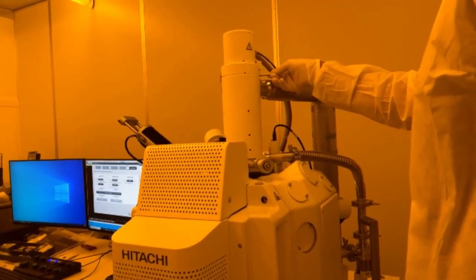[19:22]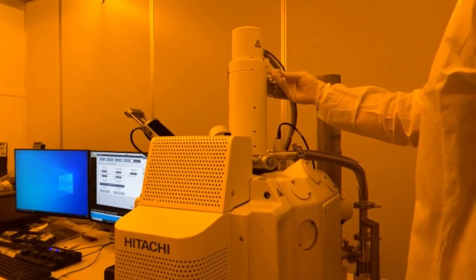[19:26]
So we hit next. We hit evac. See, now this is grayed out because we're not capturing images. We're not doing analysis. We're just going to high vacuum. So now it's going to pump down. While it's pumping down, I'll go here and just snug these up. Don't over tighten these. These will become active once it's pumped down.
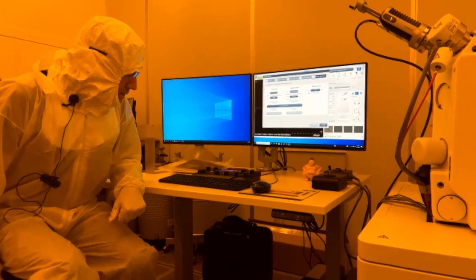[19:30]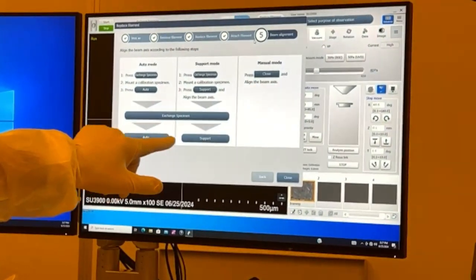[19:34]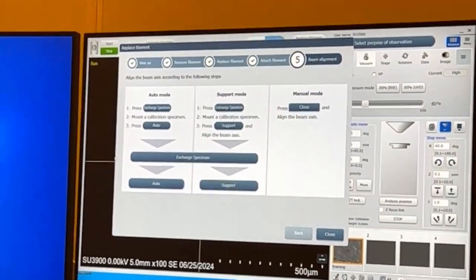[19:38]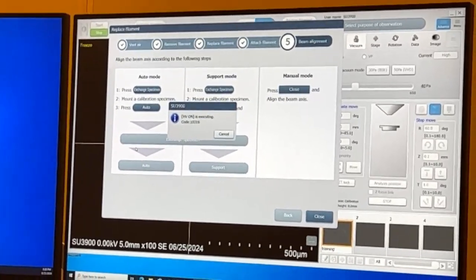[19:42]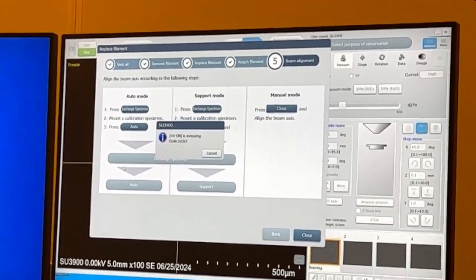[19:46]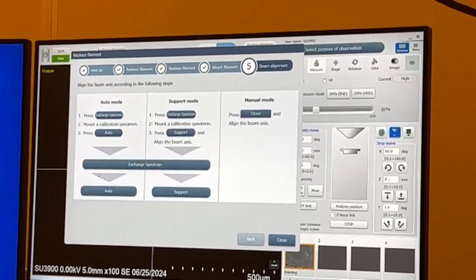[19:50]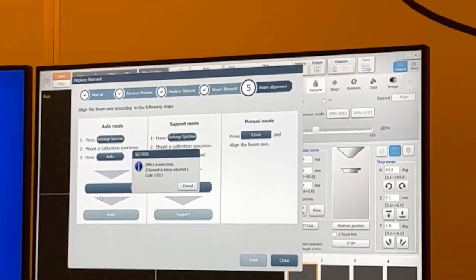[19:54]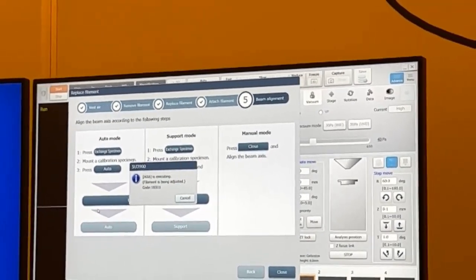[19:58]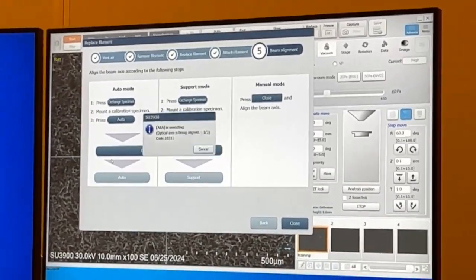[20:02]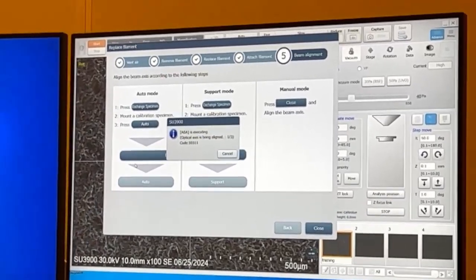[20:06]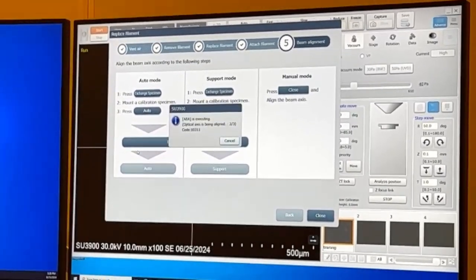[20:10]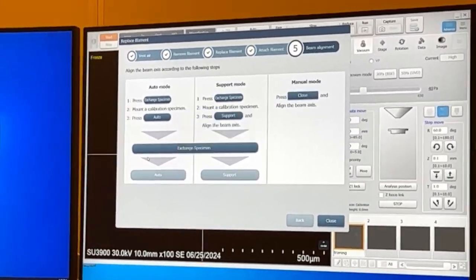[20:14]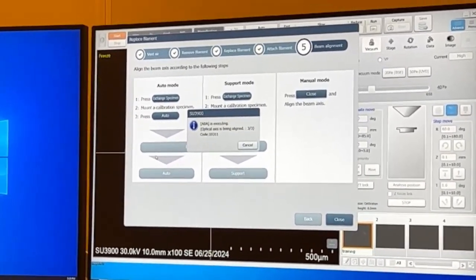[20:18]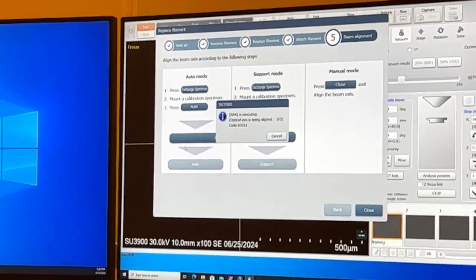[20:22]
All right, so the scope is pumped down. These are now active. We're going to use auto and let the software do its thing. So it's just going to do everything in the background. And after this, I'll show you what it would look like if you want to do it manually, and then we can check to see how well the auto function did. So you can see the beams turning on, it's doing something. But then we still have to do the alignment manually? No, you don't have to. That's what it's doing for us right now. It's doing the exact same steps we would do, but some people like to do it manually. They don't trust the autos.
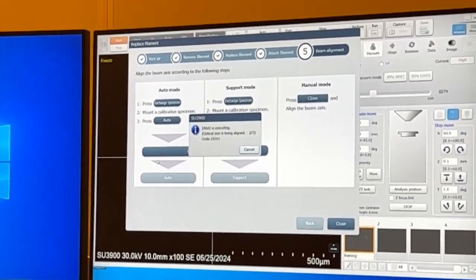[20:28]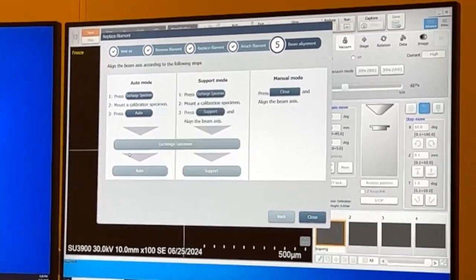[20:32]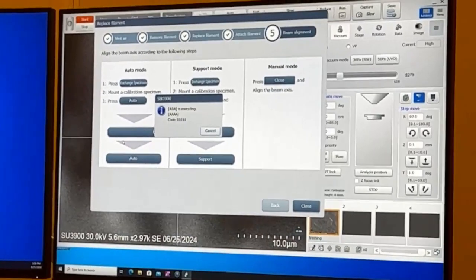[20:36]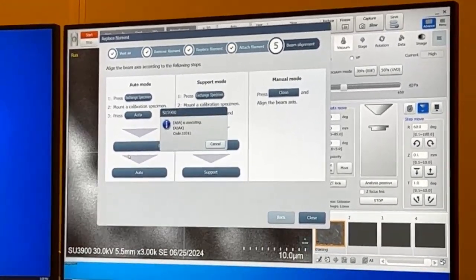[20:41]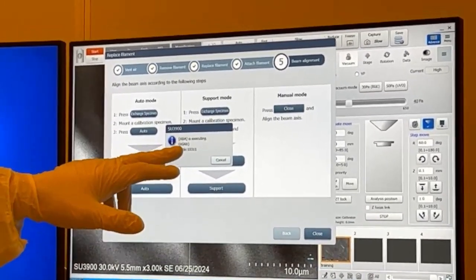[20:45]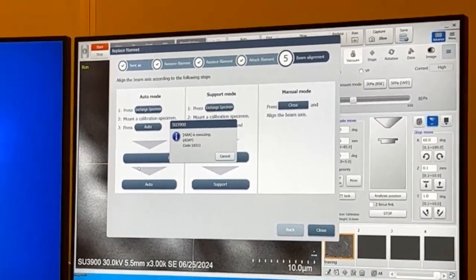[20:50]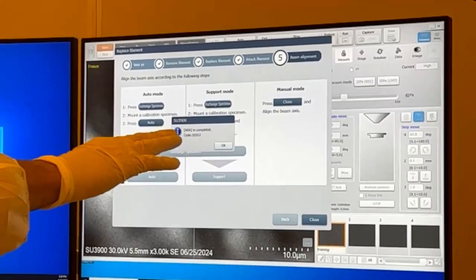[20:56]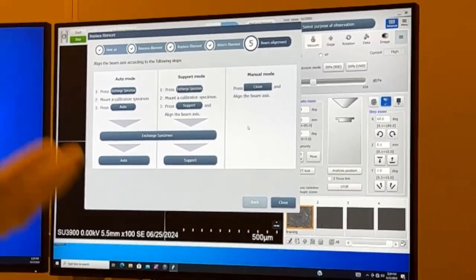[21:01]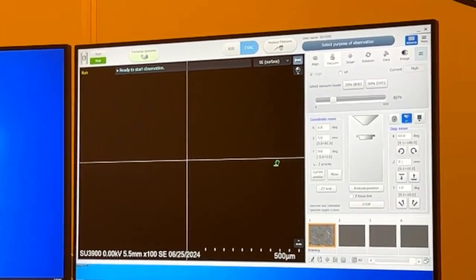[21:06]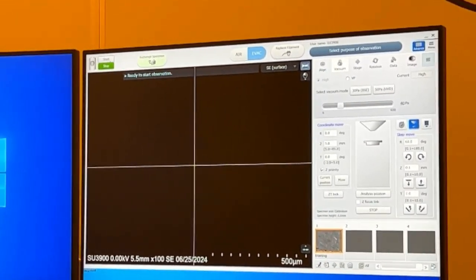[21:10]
So yeah, it's going through all the alignments that you would do. Auto stig align X, auto stig align Y. It's doing all those. So auto beam align ABA is complete. Hit OK. And that's it. Just change the filament. Nothing to it. That's pretty cool.
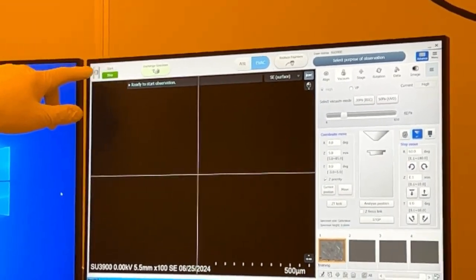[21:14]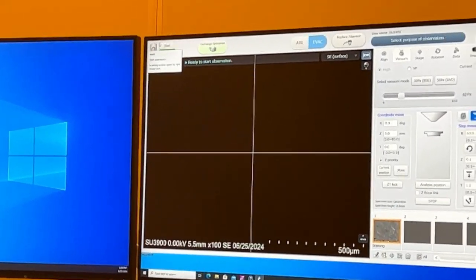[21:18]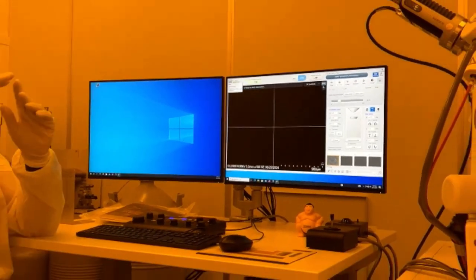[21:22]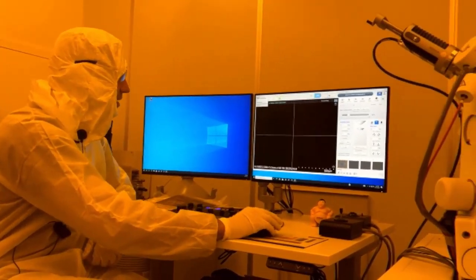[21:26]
And you can see it reset the counter, right? So that's what it looks like when you have a new filament. Even though we reset the time, like I said, it does measure the resistance of that wire as it thins out. So it will update for that.
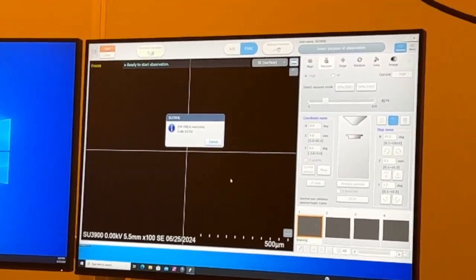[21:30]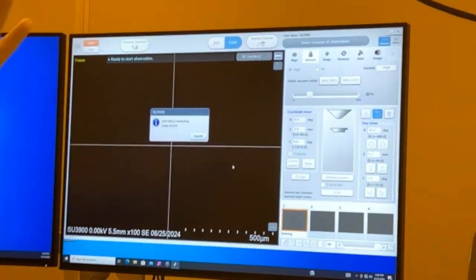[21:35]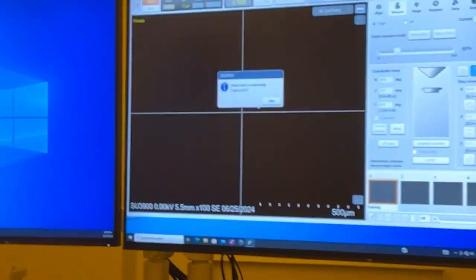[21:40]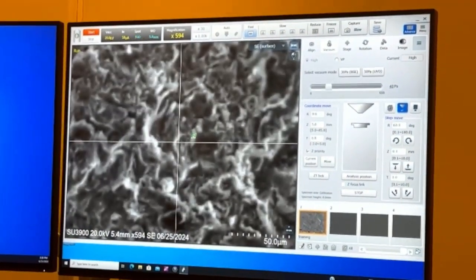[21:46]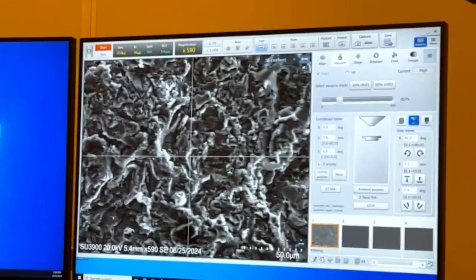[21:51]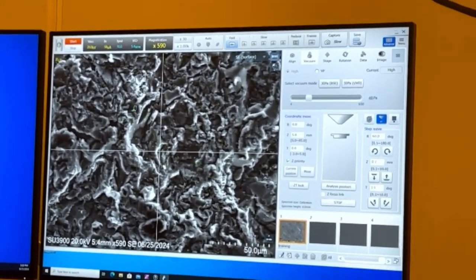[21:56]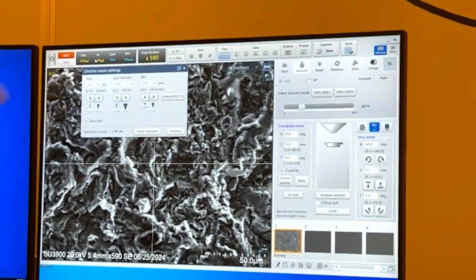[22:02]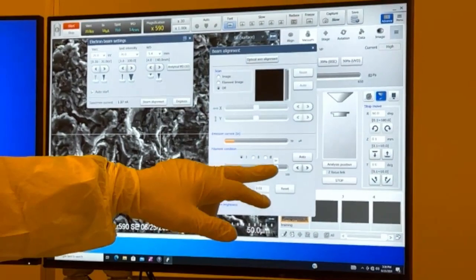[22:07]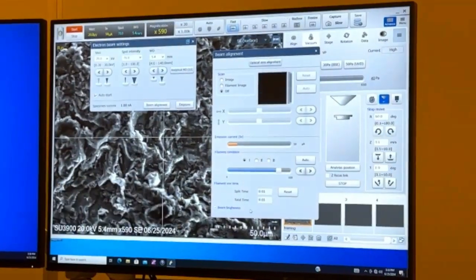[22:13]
So we're just going to turn the beam on. Because we loaded the sample, we can move the stage if we wanted to, because we did go through that whole procedure. So to get to the beam alignment, we're going to do that same procedure where we look to where our filament heating current was set. I'm going to right click on this box, and then I can go to beam align. So it did an auto at 84. You can see our hours are reset.
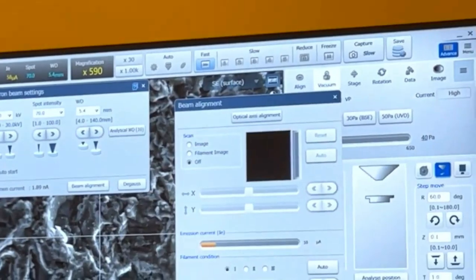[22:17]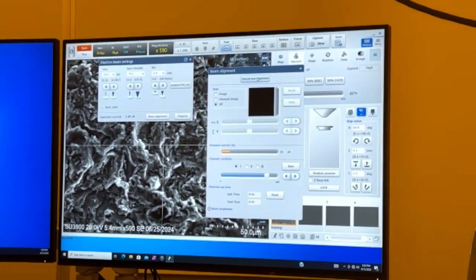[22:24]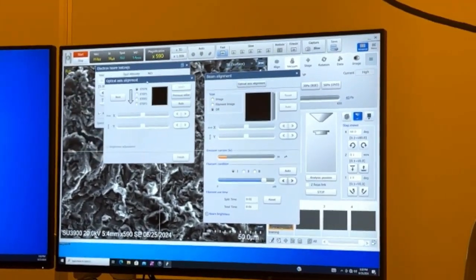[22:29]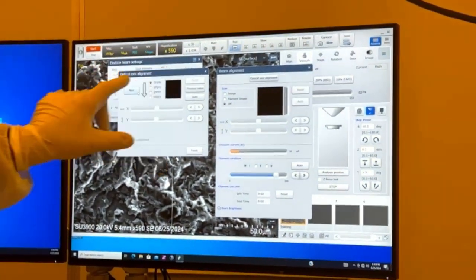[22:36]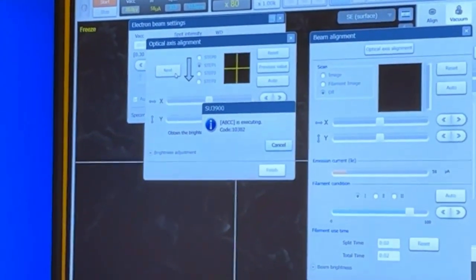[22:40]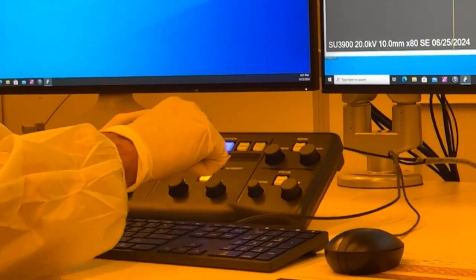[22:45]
So up at the top, we now have optical axis alignment. Optical axis is where we want to center the beam in the column. That's what it already did. So now this is the manual procedure if you want to check it. We hit optical axis alignment. It's going to bring up this window, and we hit next. Then we see these knobs have turned into our alignment knobs, and that's blinking to let us know when we're in the alignment mode.
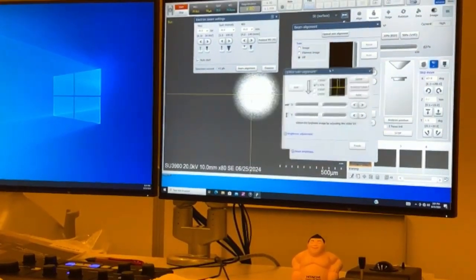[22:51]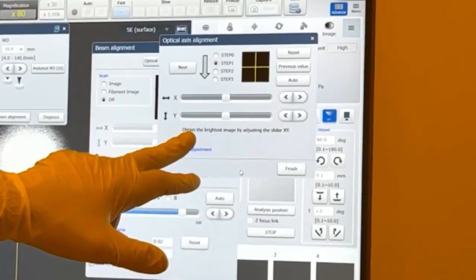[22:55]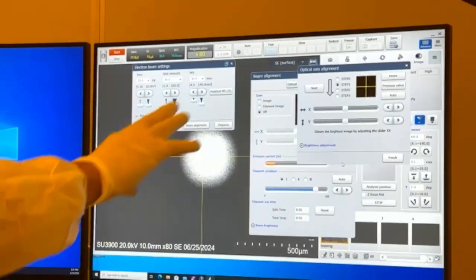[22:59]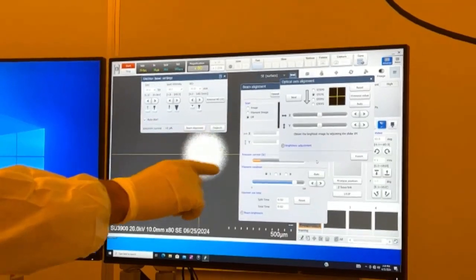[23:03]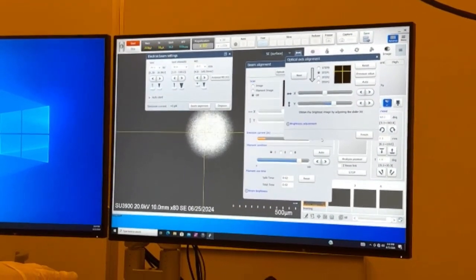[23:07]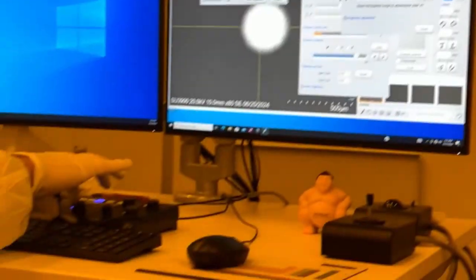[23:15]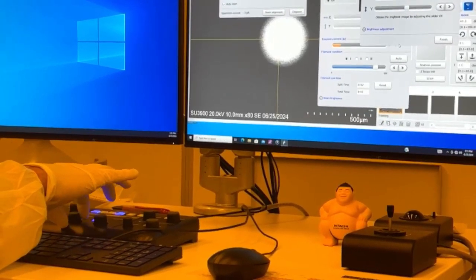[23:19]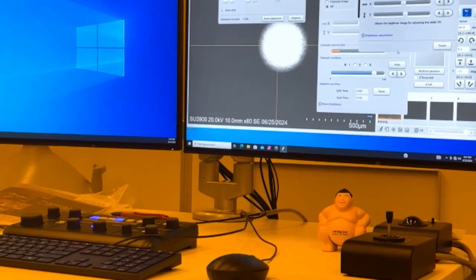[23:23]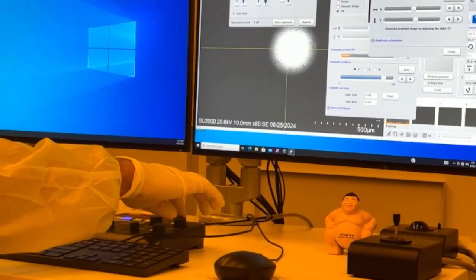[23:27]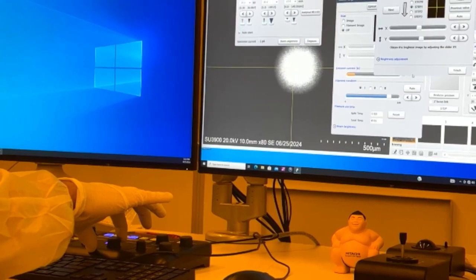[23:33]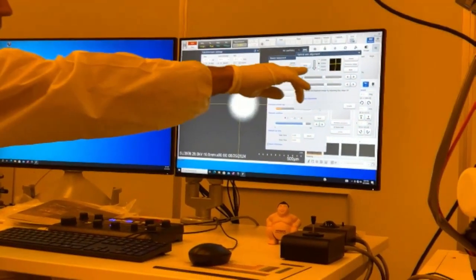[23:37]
So I'll move these. We're on step 1. It's saying obtain the brightest image by adjusting the X and Y. We're not concerned about it not being right in the center. We're just trying to make this as bright as possible. It was fairly close, but look, I'm making it a little brighter. You adjust both the X and Y to get the brightest spot. You can turn down your contrast too if it's too bright and you can't tell. We're electronically shifting the beam up in our gun. That's what we're doing right now.
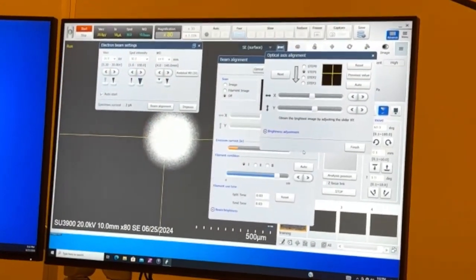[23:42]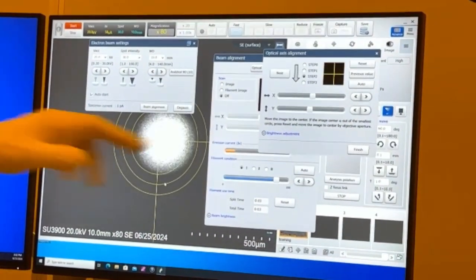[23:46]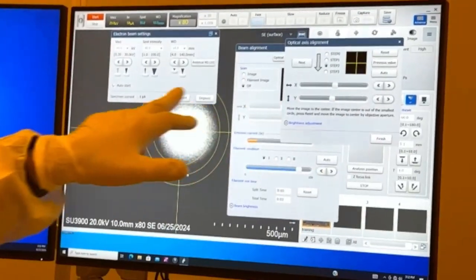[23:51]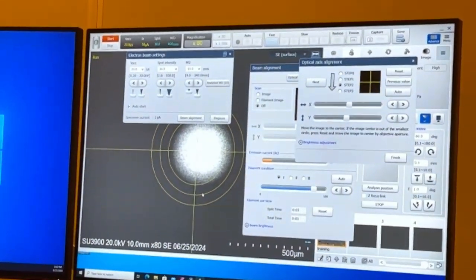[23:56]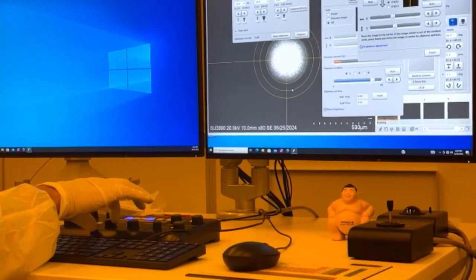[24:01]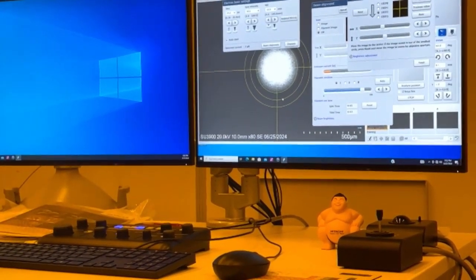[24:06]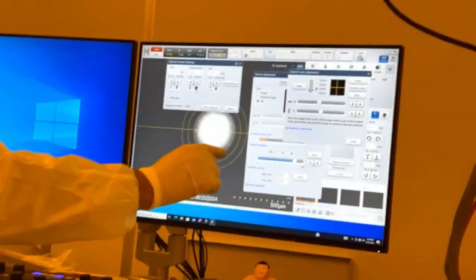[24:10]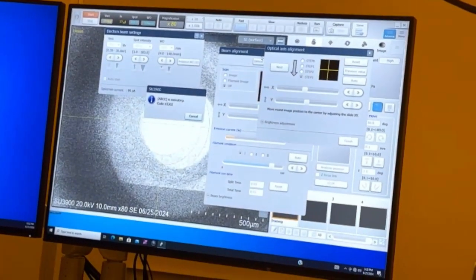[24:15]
Once we get the brightest image, we hit next. Now it's saying move the image to the center. If the image center is out of the smallest circle, press reset and move the image to center by objective aperture. But we're going to use the electronics. I remember doing something like this on the older systems. Yes. You could see it was close, right? It didn't get it perfect, but that's why you can check it manually.
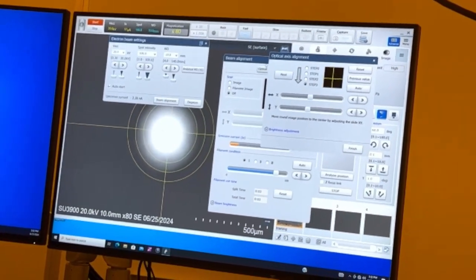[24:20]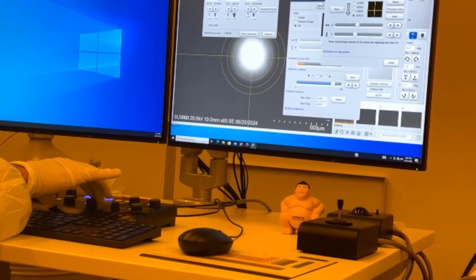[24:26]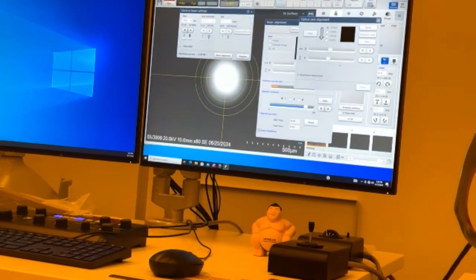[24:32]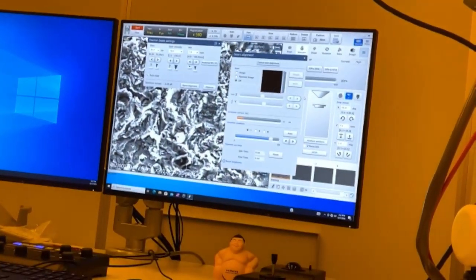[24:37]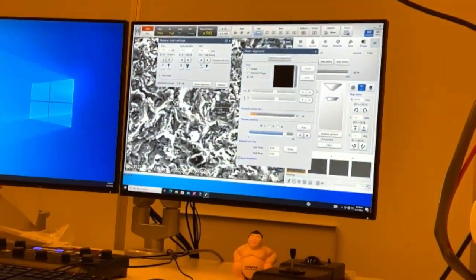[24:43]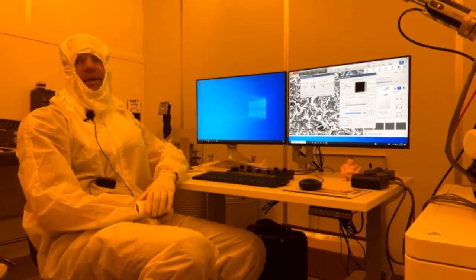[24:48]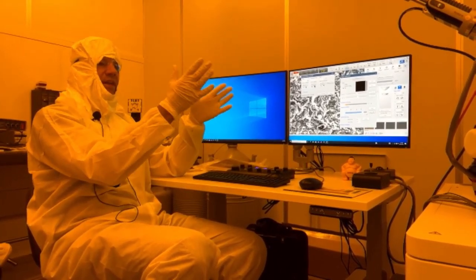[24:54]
And now the last step, same thing. We're just going to move it to the center. Hit finish. That's it. And actually it is a little brighter. So if you want to check it manually, like I said, auto is good, it gets you close. And if you want to double check it manually, go right ahead. So the first one is getting the brightest spot. The next two, you move that spot to the center, and that's it.
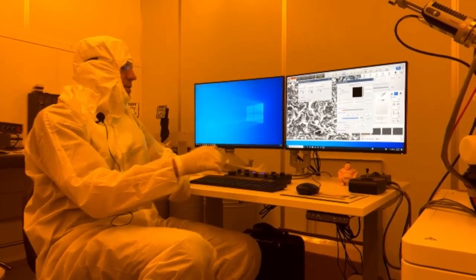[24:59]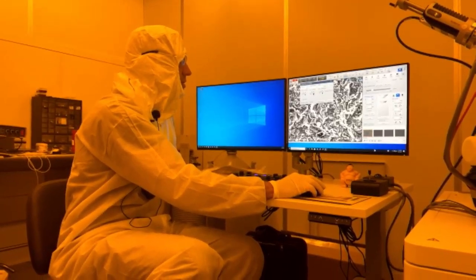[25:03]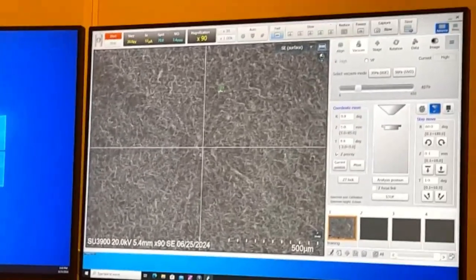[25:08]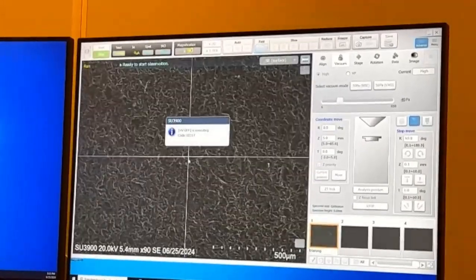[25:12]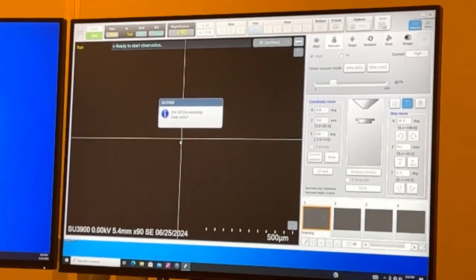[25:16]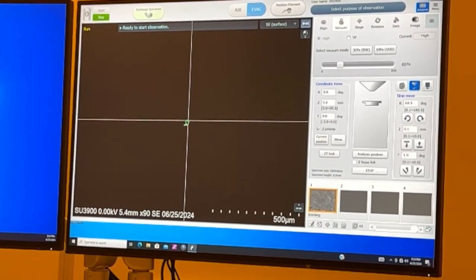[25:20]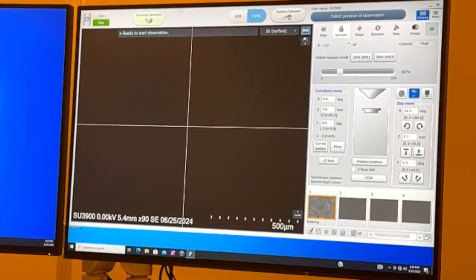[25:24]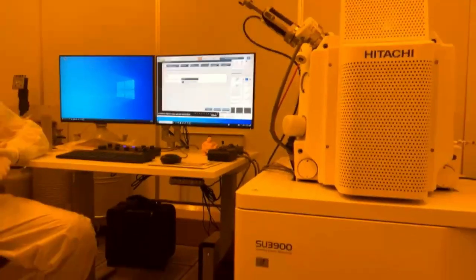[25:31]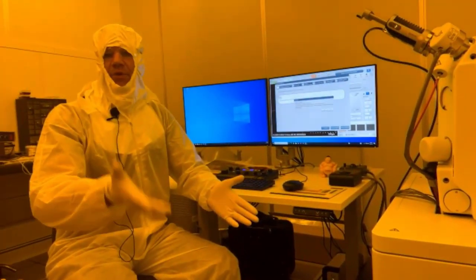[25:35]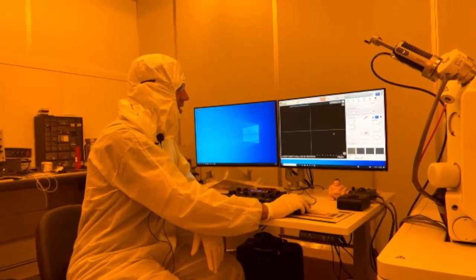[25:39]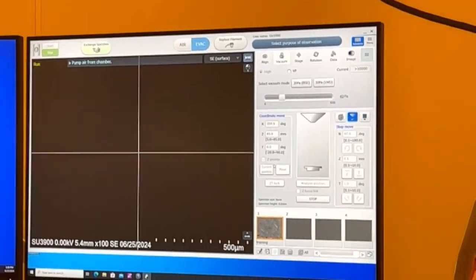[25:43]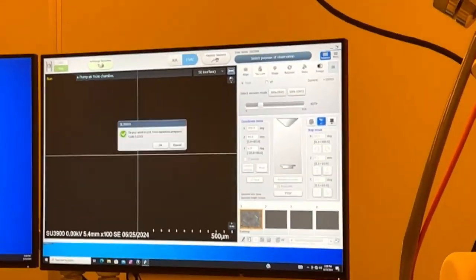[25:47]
So we can close these. Auto. And once you're done, just hit stop. Then we can do specimen exchange, remove specimen, and now we'll shut it down for good. Once we remove our sample for the final time, we're going to close the door and just hit evac. Let it pump down. While it's pumping down, we can exit out of the software.
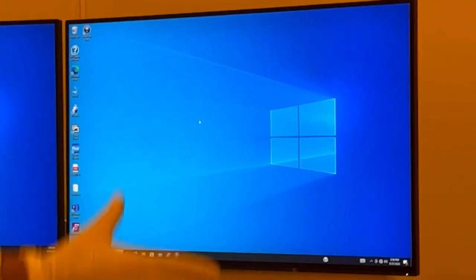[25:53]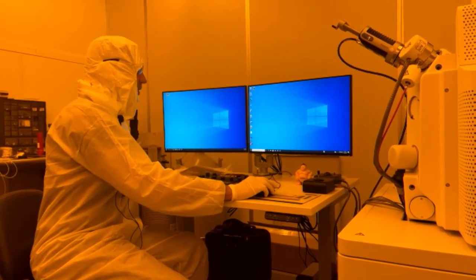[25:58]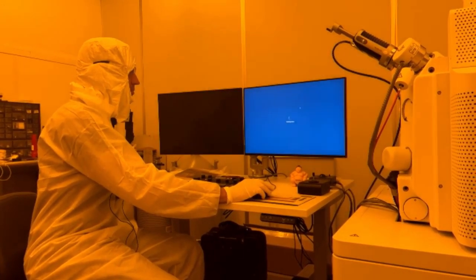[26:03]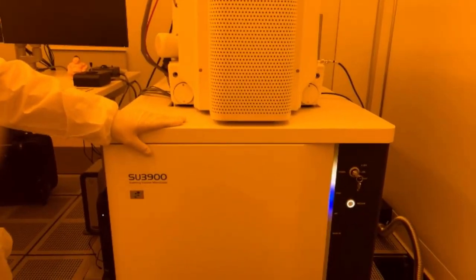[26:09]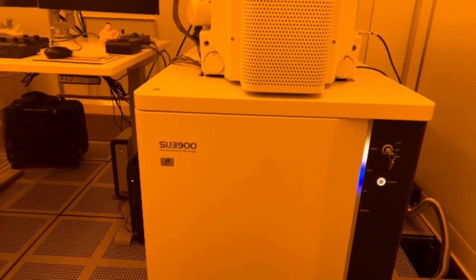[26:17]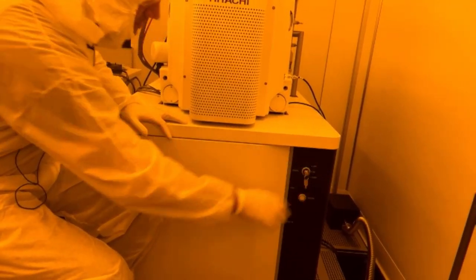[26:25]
At this point, you can either leave the computer on if you know you're going to be gone for a while, or we're just going to do a normal Windows shutdown. Shut the computer down. Then we wait for the chamber to completely evacuate, wait for that light to go solid, and then we turn the key off once that's solid. And you just turn it off.